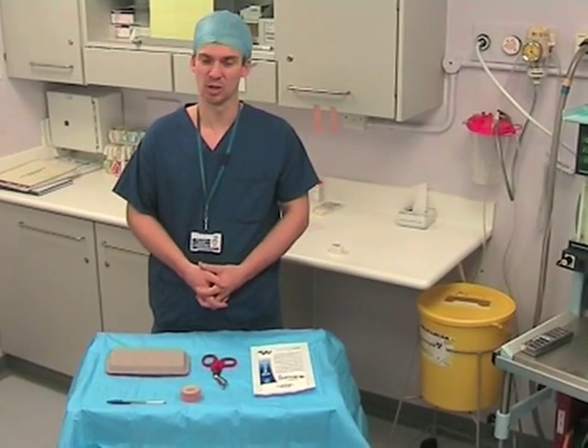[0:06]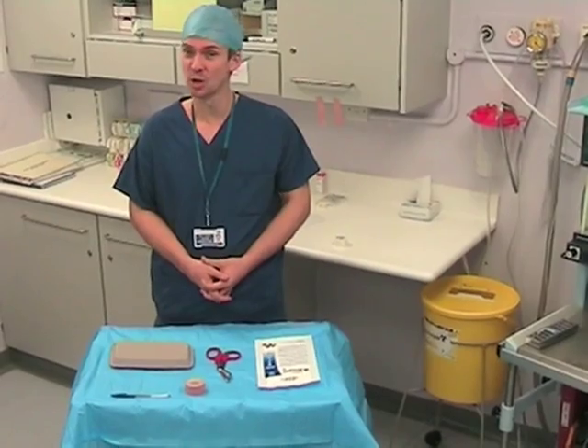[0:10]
Hello, my name is Dr. Allen. I'm an anaesthetic consultant here at Moorfields Eye Hospital, and today I'm going to show you how to make a simple, cheap, yet effective model for training Sub-Tenon's anaesthesia.
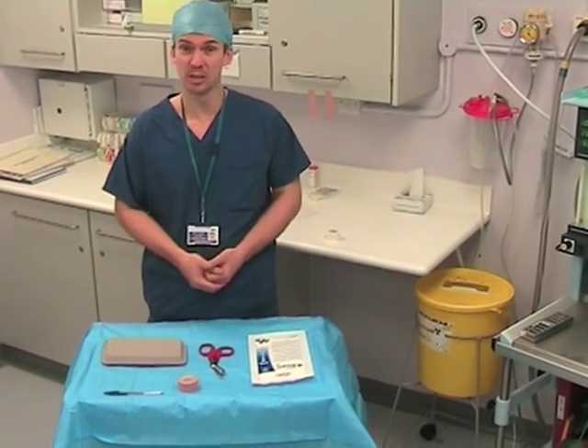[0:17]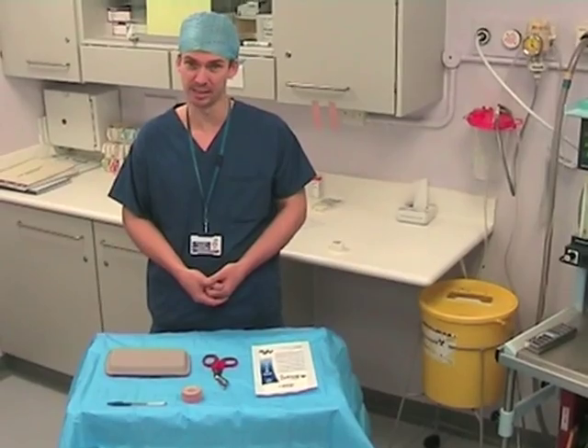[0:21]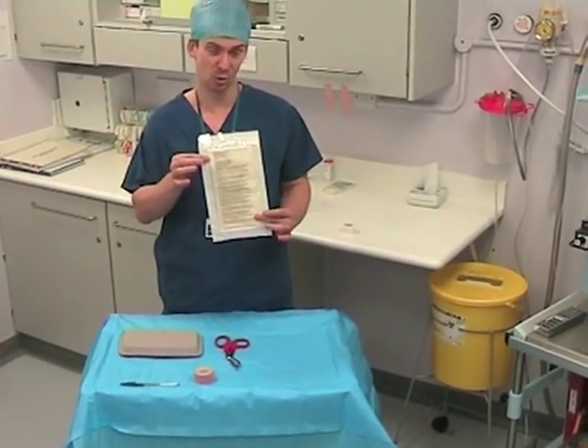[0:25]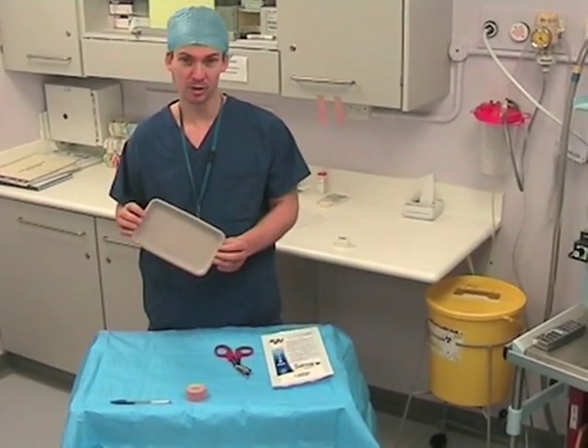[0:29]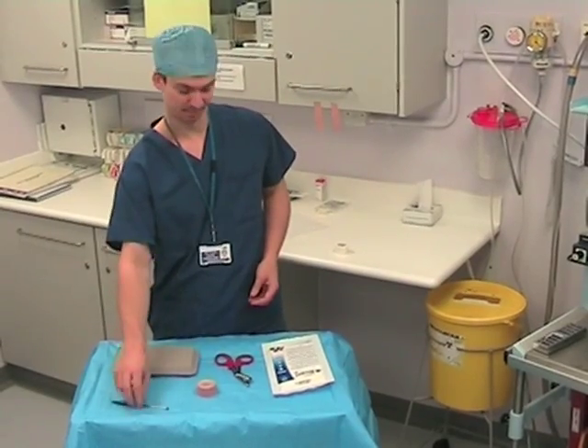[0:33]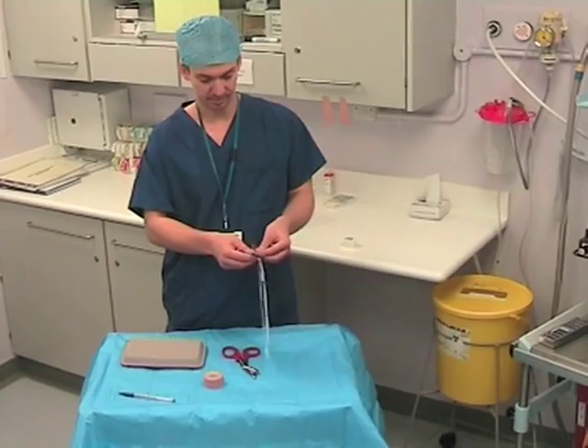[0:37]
And all you need to achieve this is a number of items which can be easily picked up in any operating theatre. These items are a pair of surgical gloves, some scissors, a couple of cardboard drug trays, some sticky tape and a pen. To make the eyeball, you would first of all take the sterile glove,
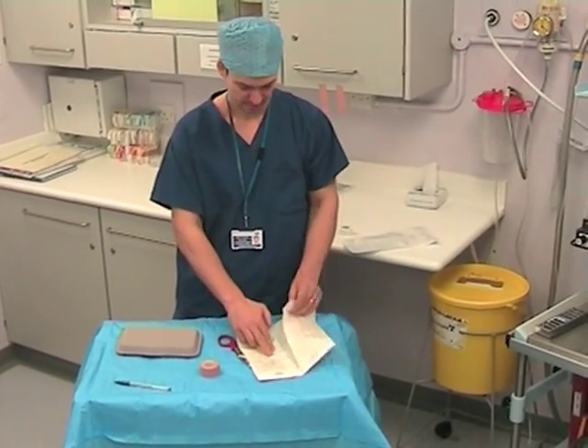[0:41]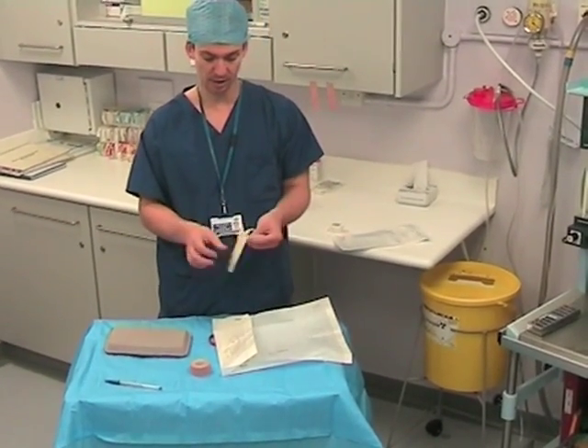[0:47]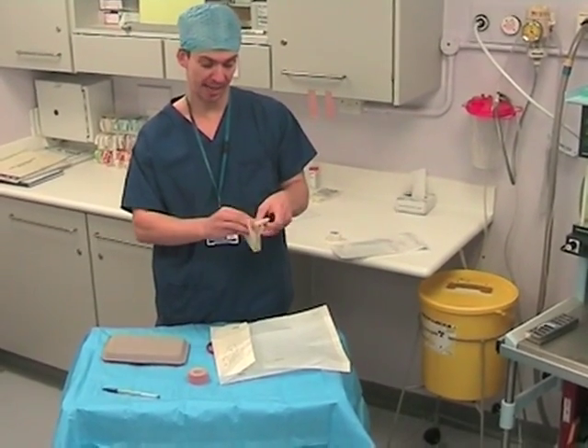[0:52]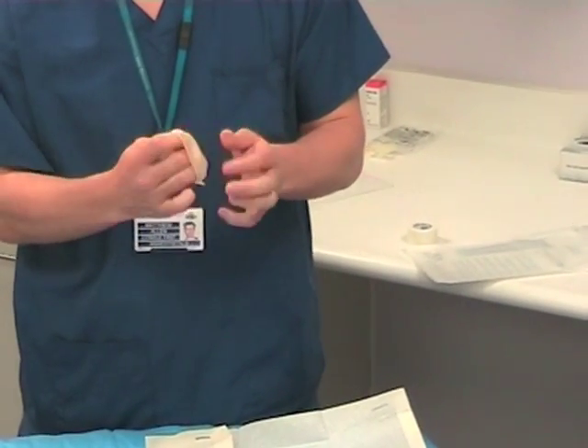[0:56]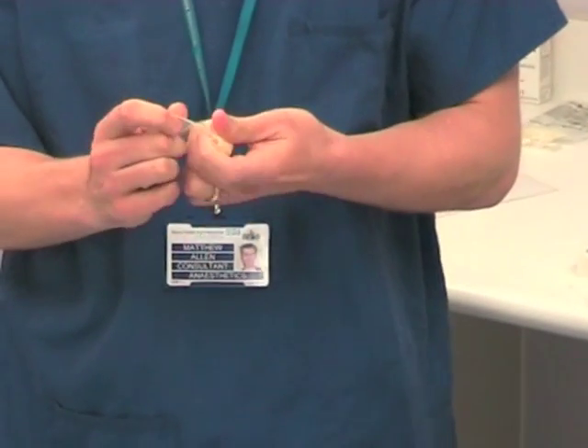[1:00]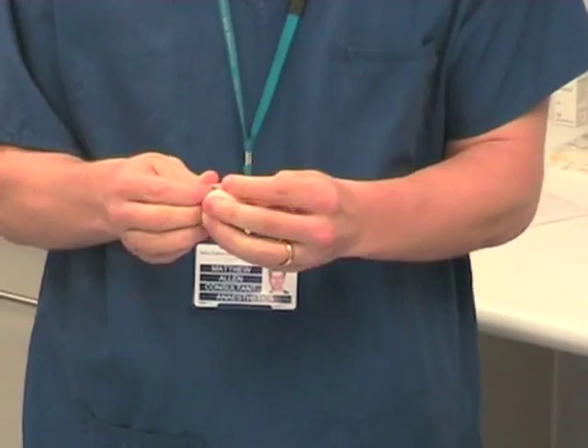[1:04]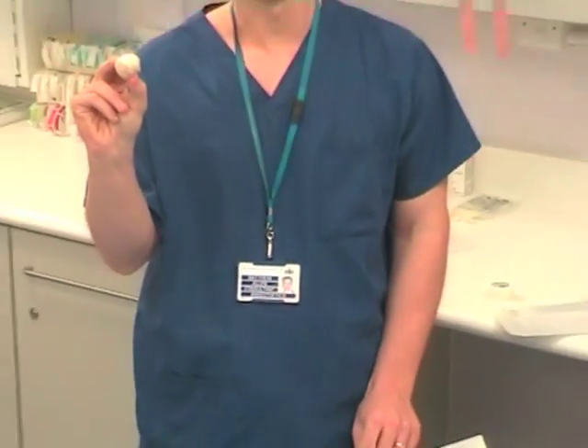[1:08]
and there's a number of ways that you can achieve this, but a simple method we have found is by taking one of the gloves, opening it up, passing the fingers back into the hole of the glove, and then continue to wrap it in on itself. And what you're trying to achieve is a very tightly packaged rubber ball. If you continue to roll in on itself, that is what you get.
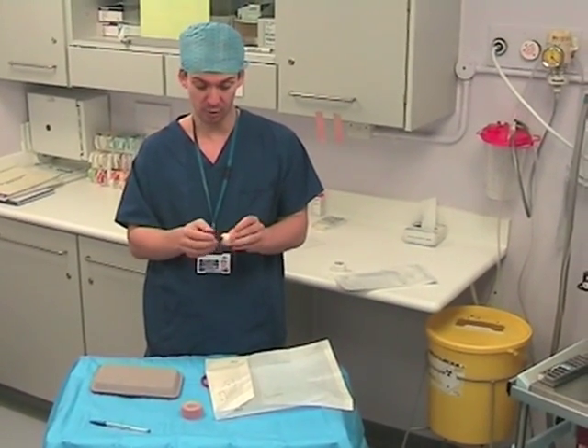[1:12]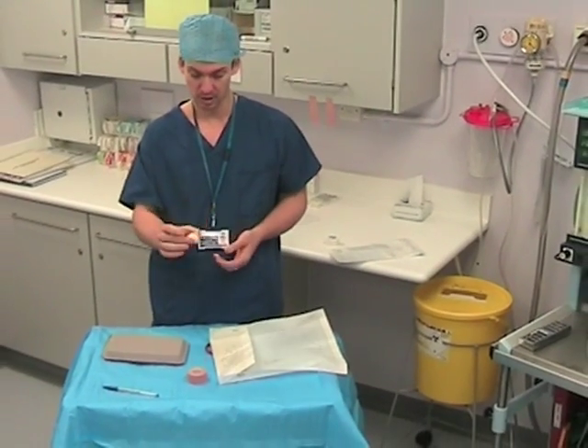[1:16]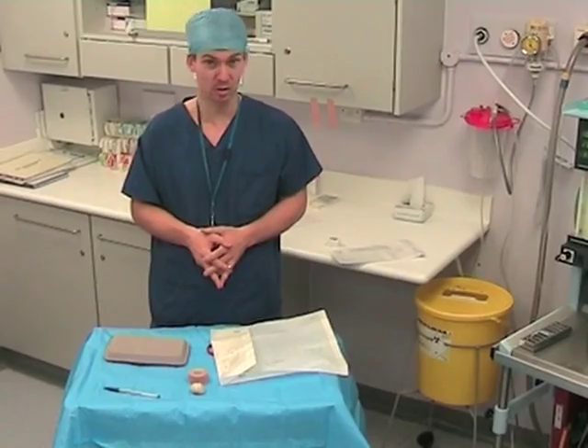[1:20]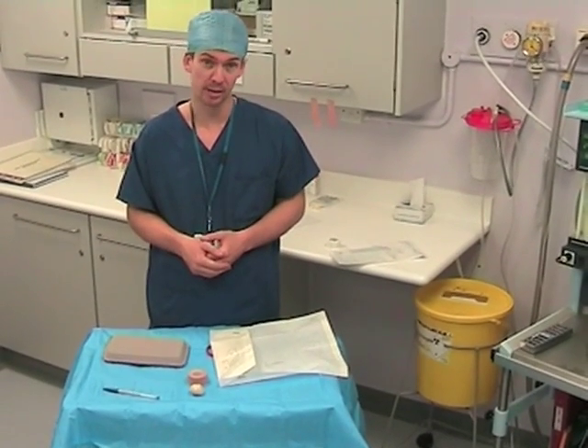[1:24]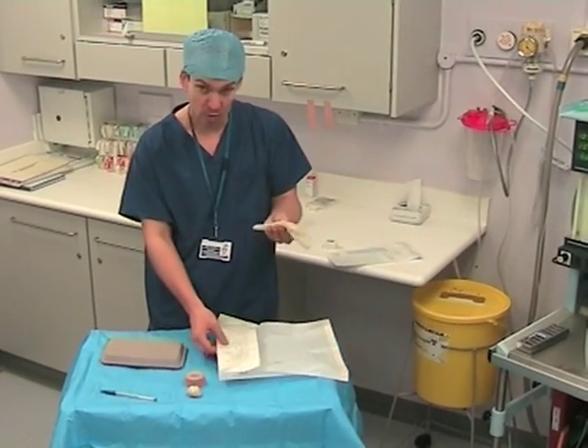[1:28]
Now, if that stays there by itself, all well and good. If not, you could put a little piece of sticky tape onto the back just to hold its position. Once you've made the eyeball, what you want to do now is move on to make the layers of the eye. And these layers are the conjunctiva, which will be the superficial layer, and also the tenons, which is the deeper layer. And to do this, you take your other glove,
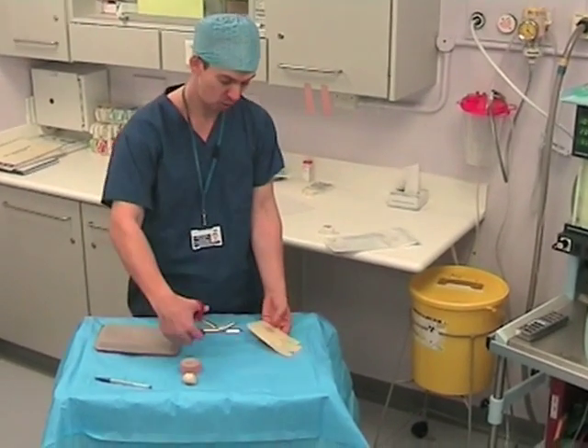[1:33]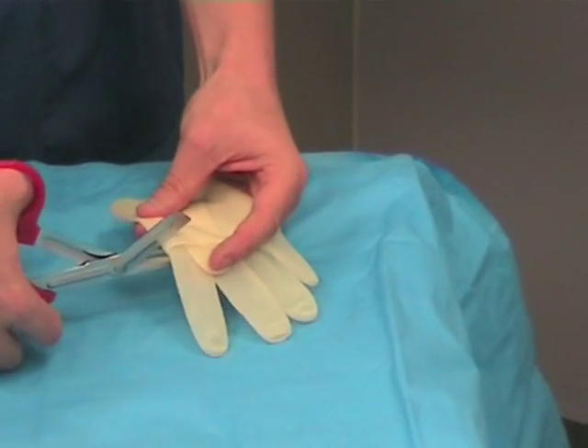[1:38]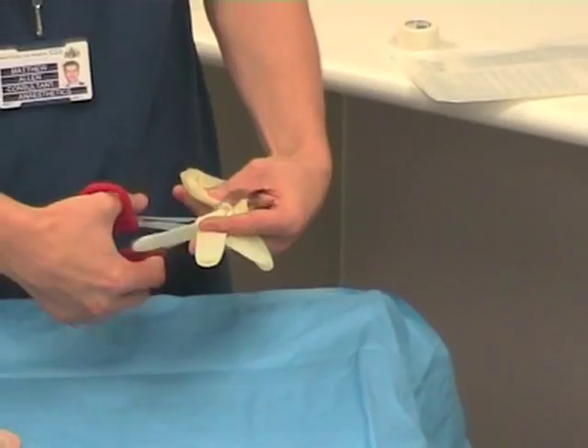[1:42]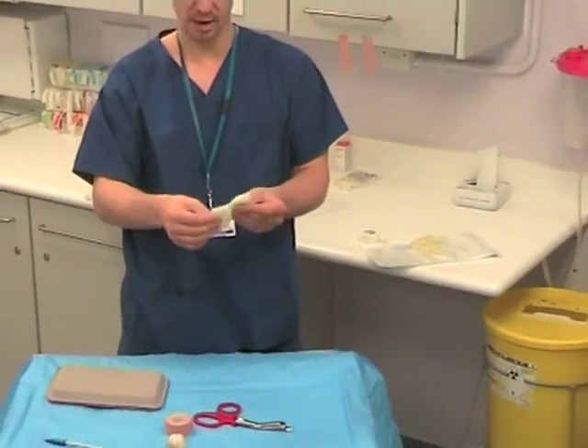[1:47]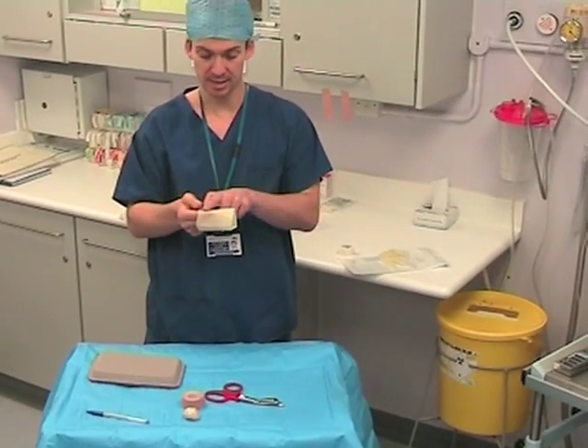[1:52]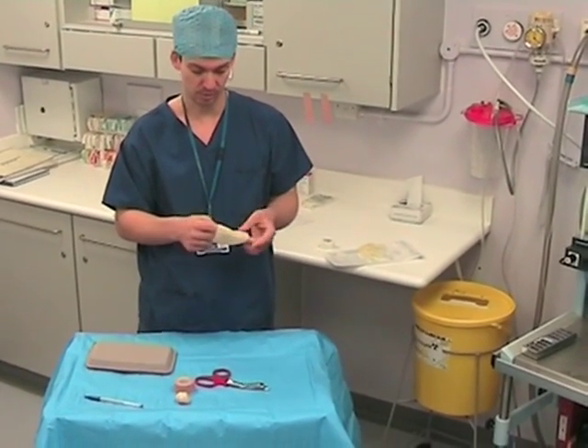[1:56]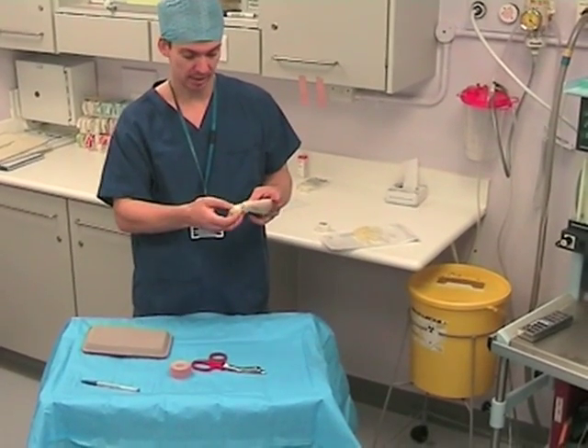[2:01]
and using a pair of scissors, you want to cut at the level of the fingers, and what you'll end up with is a double layered tube. So you can discard the fingers, and all you have left is a double layered tube, like so. And as I said, this will become the conjunctiva, which will be the superficial layer, and the deeper layer will be the tenons.
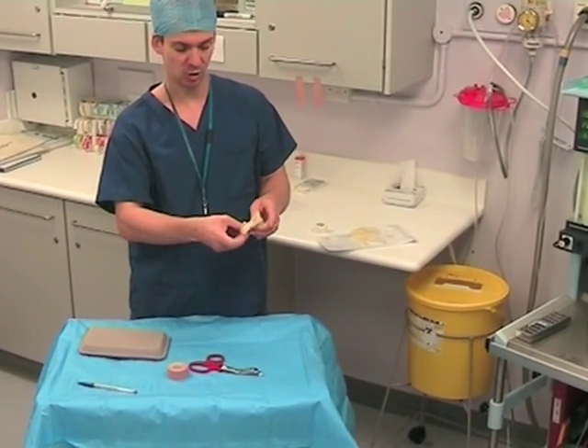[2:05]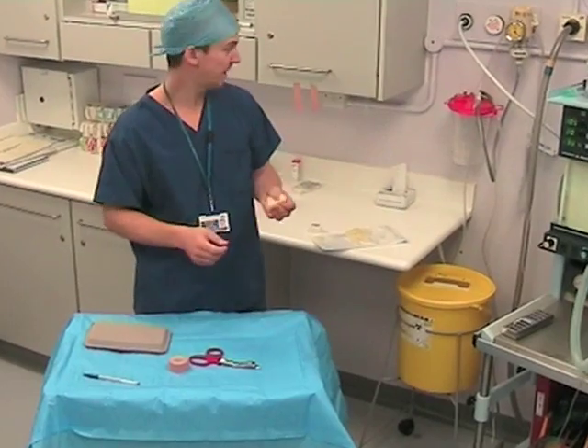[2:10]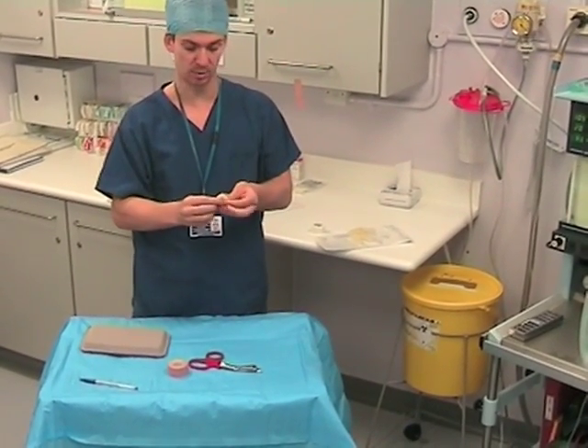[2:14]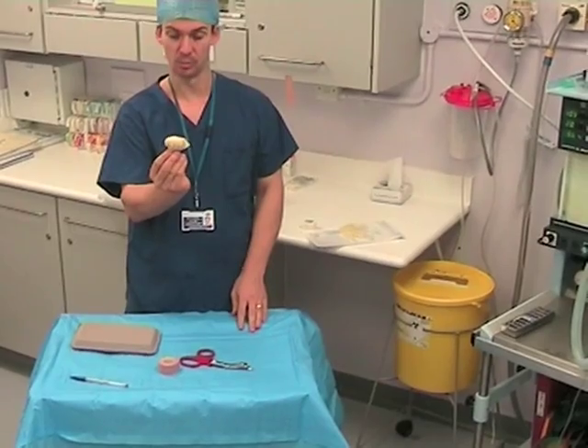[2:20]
Taking the double layered tube, you can now place the eyeball into the centre, hold it in place, and then twist it around to make a stalk. Once you've made the stalk, take a piece of sticky tape just to hold that into position. So there you have your eyeball.
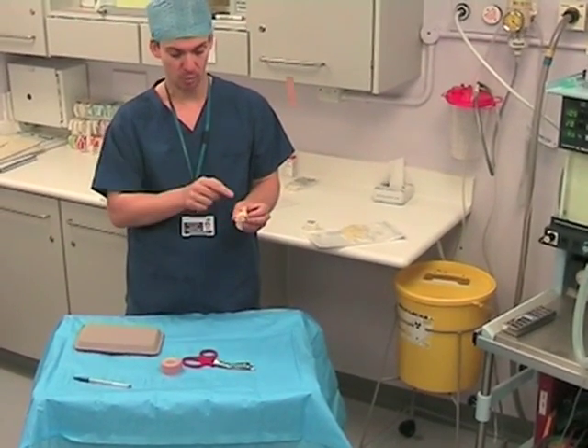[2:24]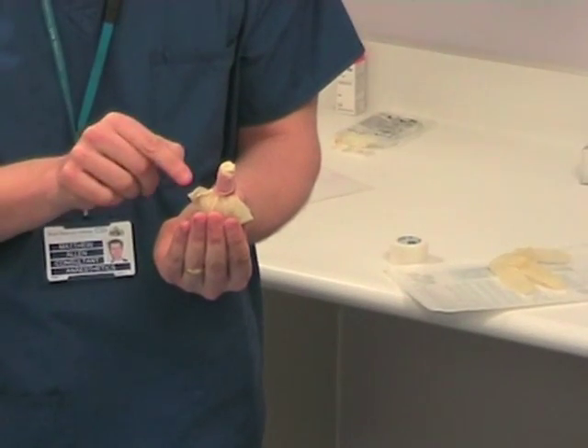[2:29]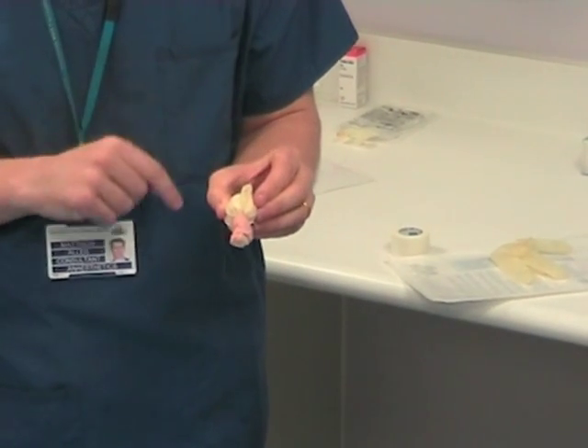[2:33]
Now it's important to note that the double layered tube on top has two different ends. One end which is free, you've got two different layers which are very obvious, and the other one which contains the reflection, and it's this layer that you will be attempting the Sub-Tenon's block on.
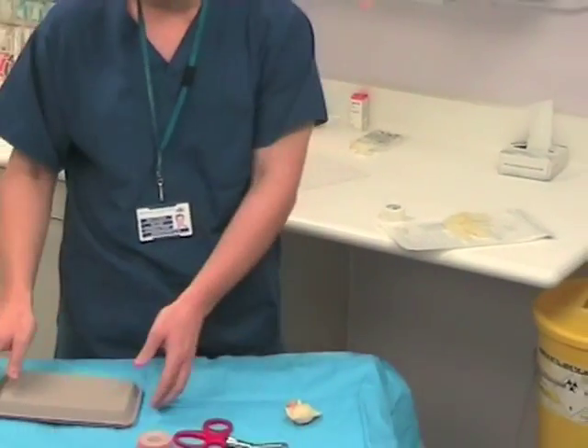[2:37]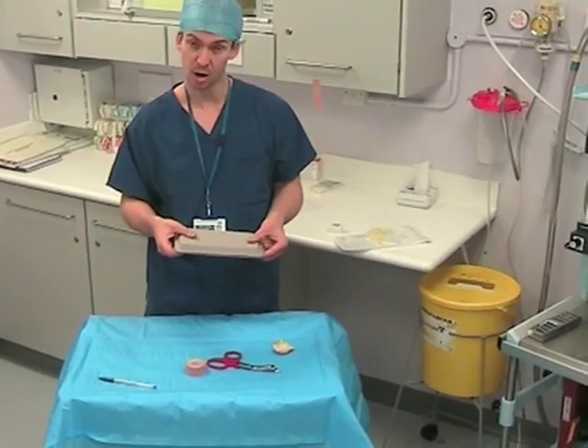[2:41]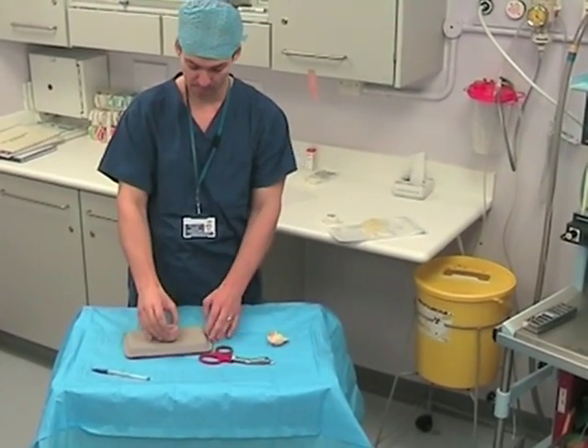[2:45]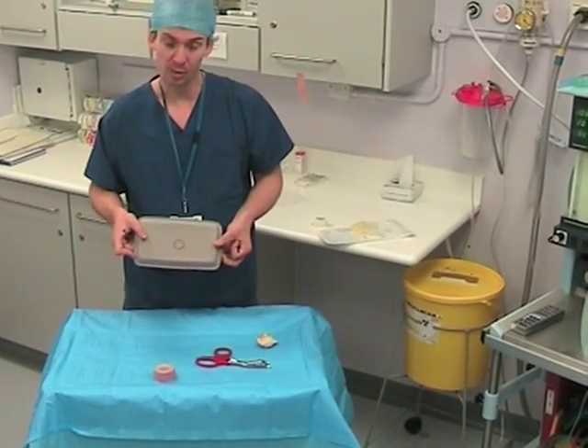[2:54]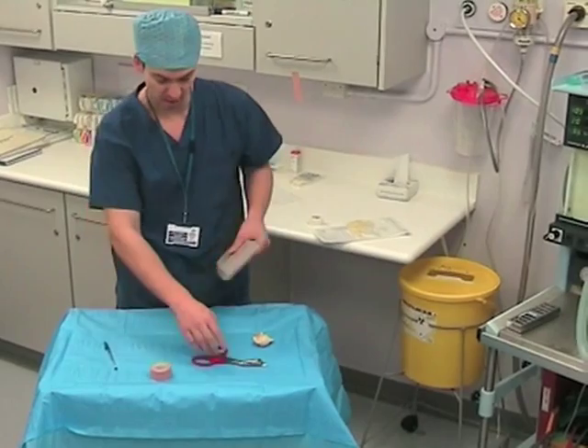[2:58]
Once you've got your eyeball, you now want to hold it in place, and to do this we use a couple of cardboard trays. I found by using the centre ring of a piece of elastoplast, you can actually get a good template. So draw in the centre, and that template will approximate to the size of the eyeball. Then you want to create the hole using a pair of scissors.
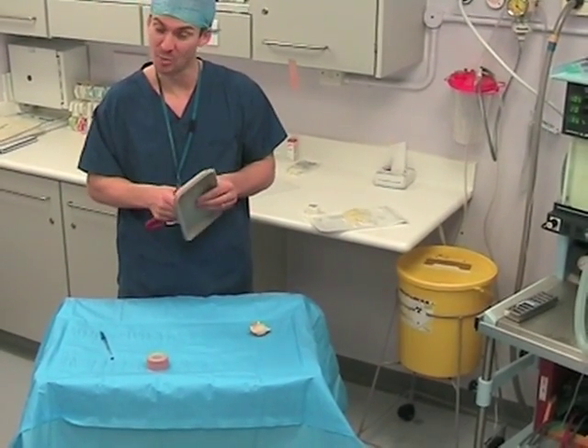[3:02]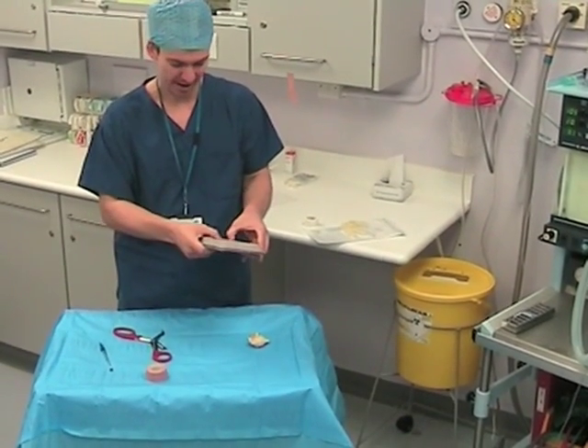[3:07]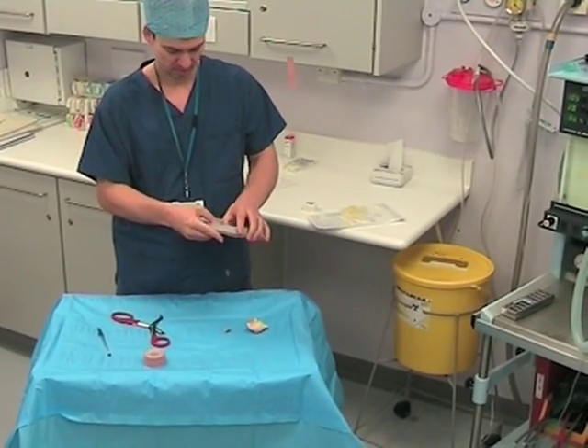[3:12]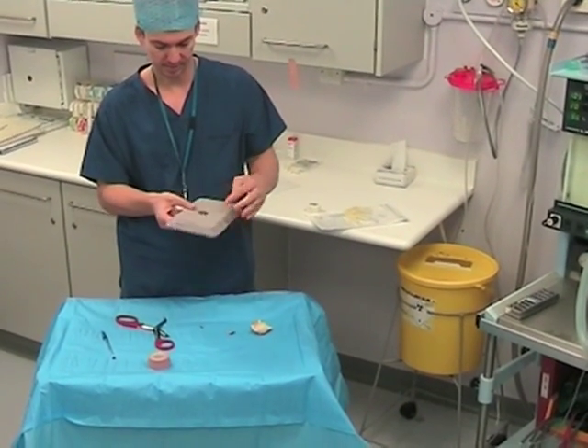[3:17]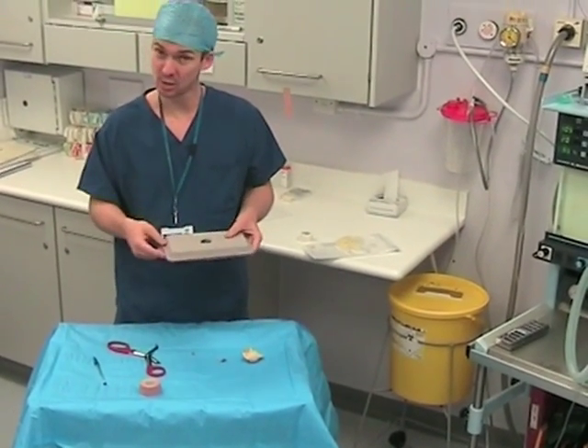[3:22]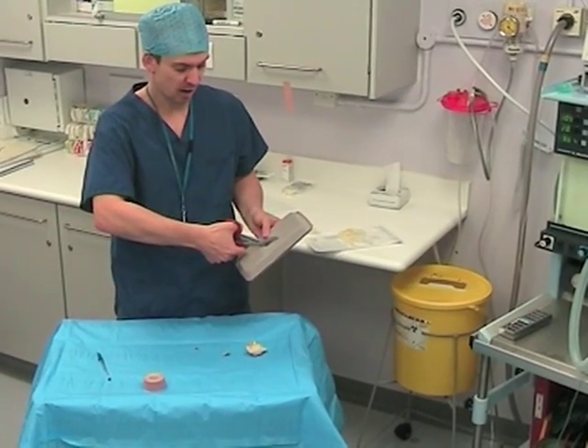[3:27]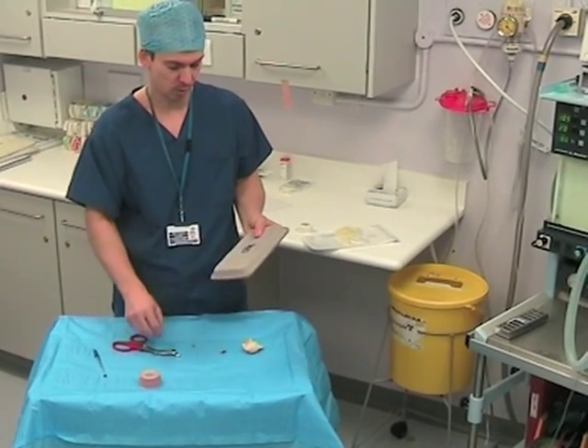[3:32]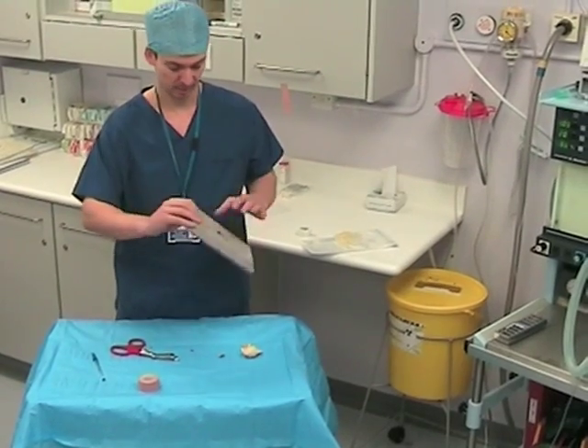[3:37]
You may want to get your adult helper to do this. And very carefully expand the hole, until you have something like that. In order to facilitate the passage of the Sub-Tenon's needle, it's important to create a little alcove. So by making a triangular cut in the corner of the paper tray, like so, you will have ample passage for the Sub-Tenon's needle to pass through.
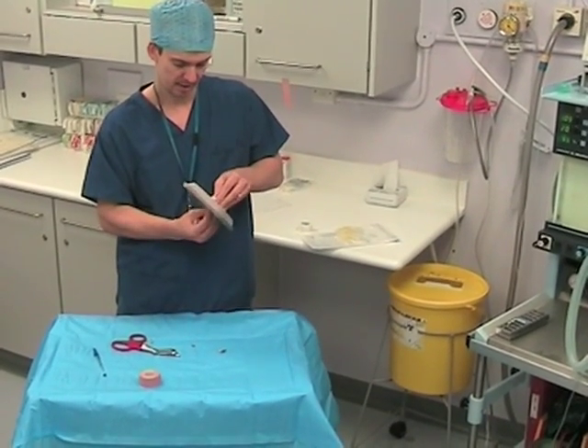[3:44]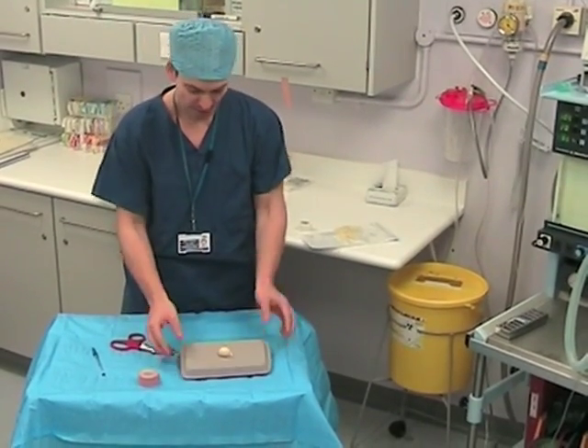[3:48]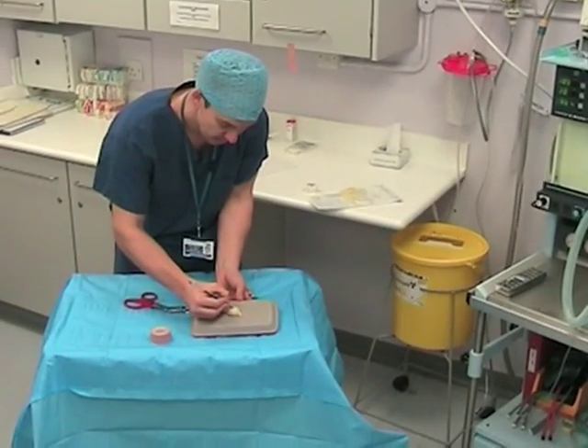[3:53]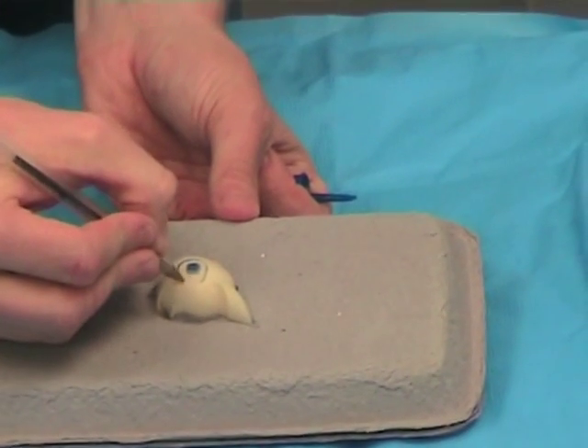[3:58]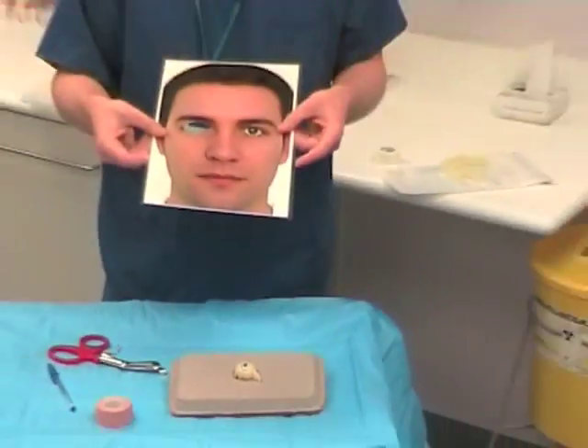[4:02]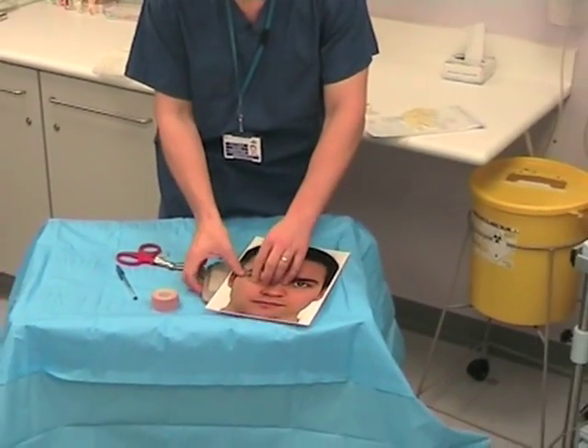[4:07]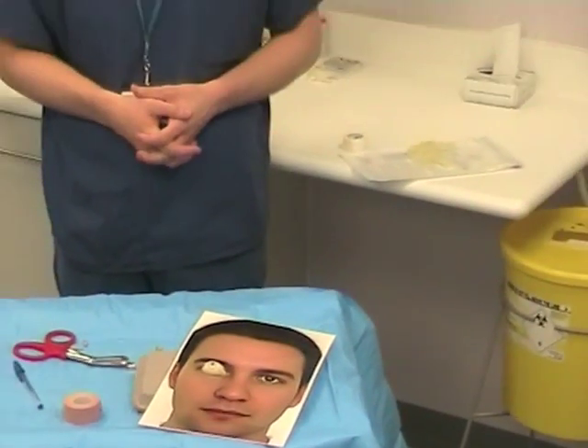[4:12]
Finally, you can pass your eyeball through the hole, and it's held in place like that. So there you have your Sub-Tenon's model. For realism, you can take a pen and create a pupil and an iris, and for even more realism, we've created a model with a face with an eye cut out, which you can pass over like so. And there you have a Sub-Tenon's model ready for use in training.
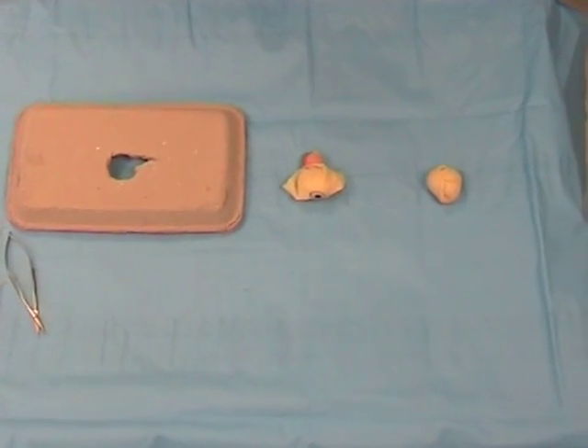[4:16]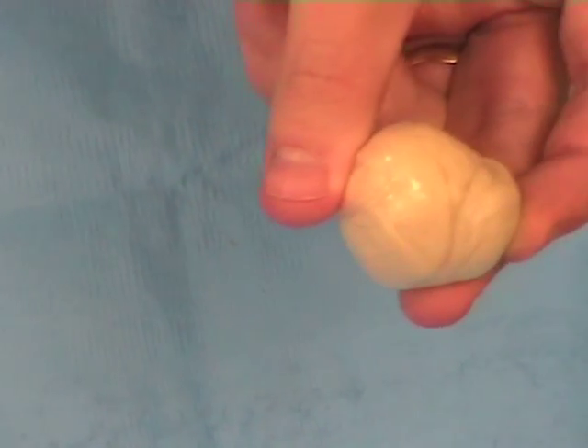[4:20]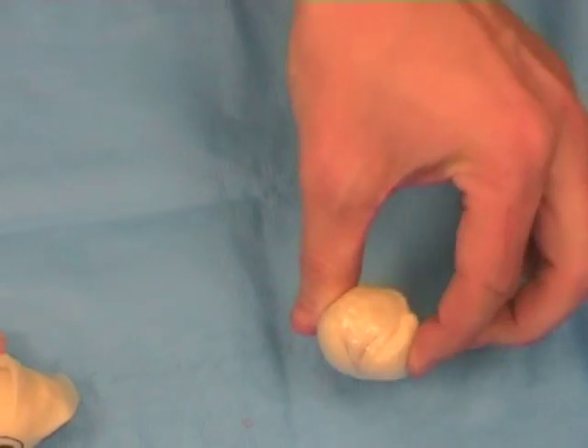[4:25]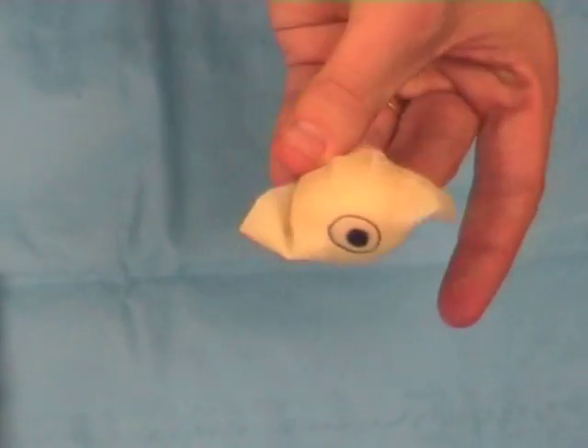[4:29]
Right, so now I'd like to actually demonstrate how we would use this model. Just to very quickly recap, we have our eyeball, which was created from one of the sterile surgical gloves and was wrapped upon itself to create this tight ball. This ball is then placed into a double layered ring which we created from the other surgical glove.
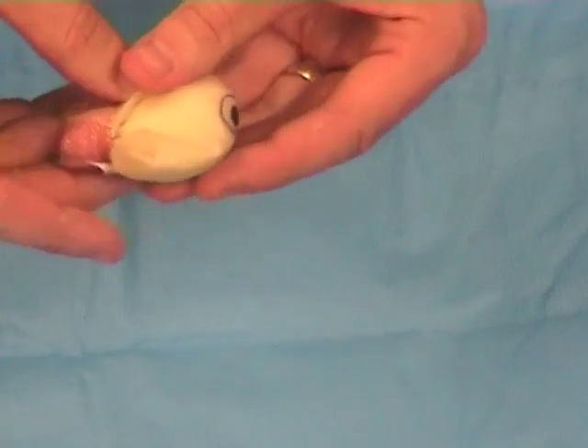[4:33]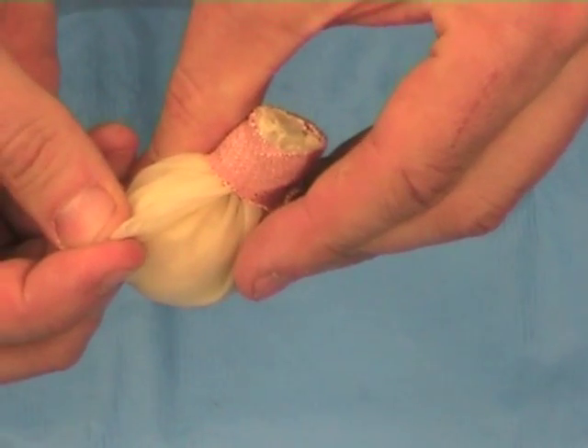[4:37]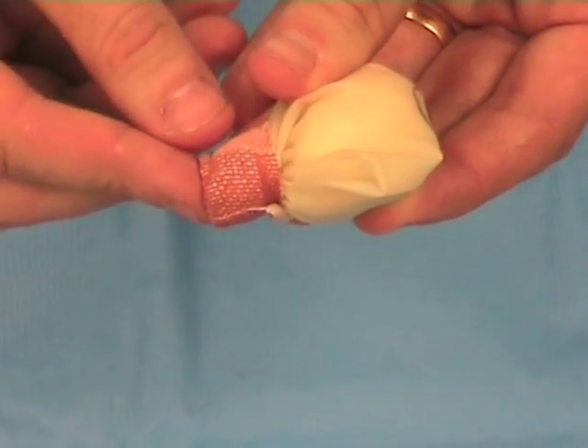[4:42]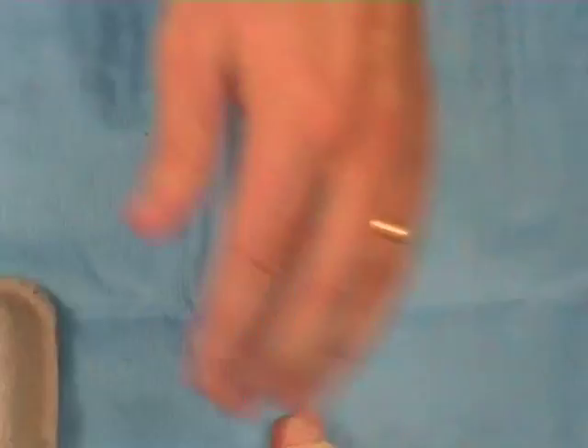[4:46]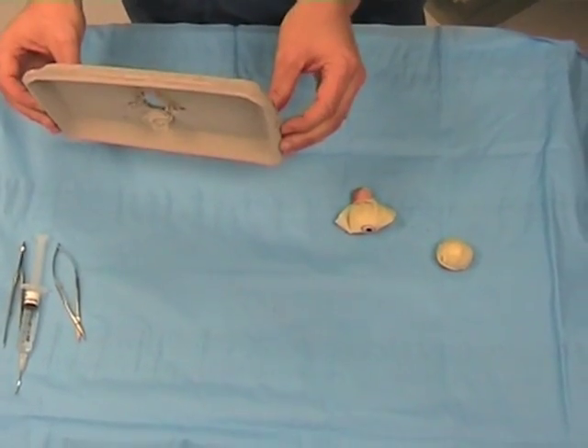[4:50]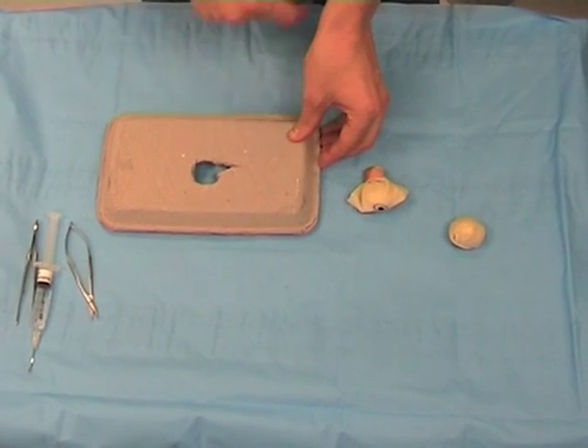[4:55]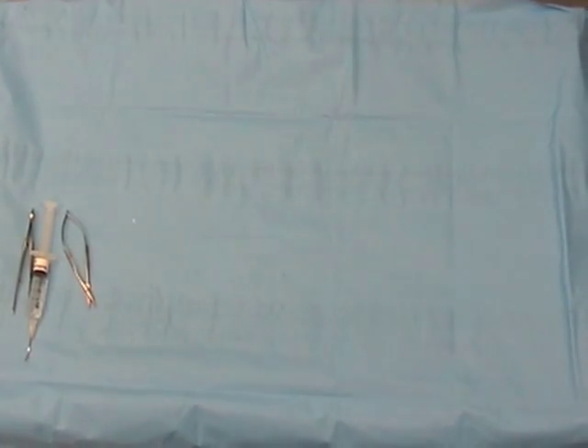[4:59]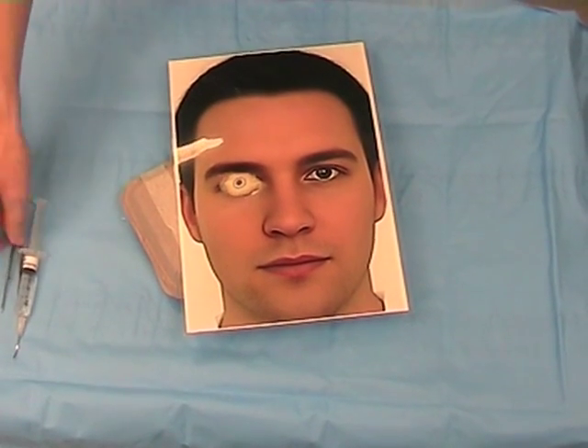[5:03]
And I think it's important just to remind you that we have two different ends here. There's an end which was cut, which is the side we won't be using, and there's the end which has the reflection of the glove, and this will become the inferior nasal part of the eye. And then of course we have our structure for holding the model, and this is two cardboard trays with a circular hole cut out and a recess to allow passage of the Sub-Tenon's needle. So now I'd like to quickly demonstrate the model.
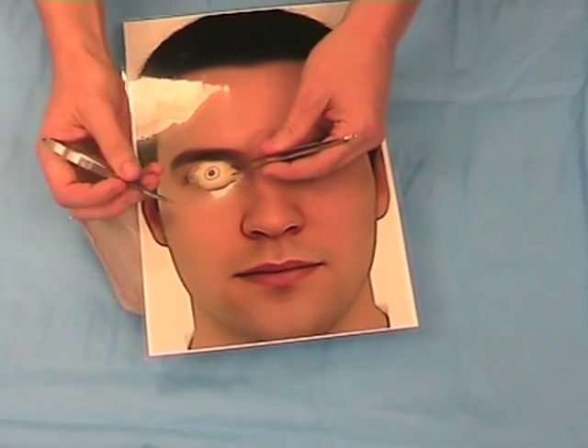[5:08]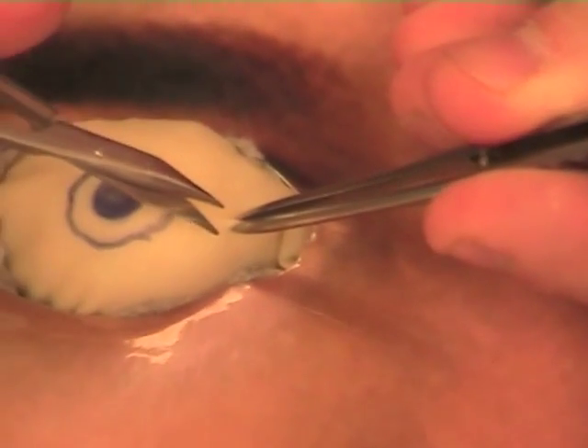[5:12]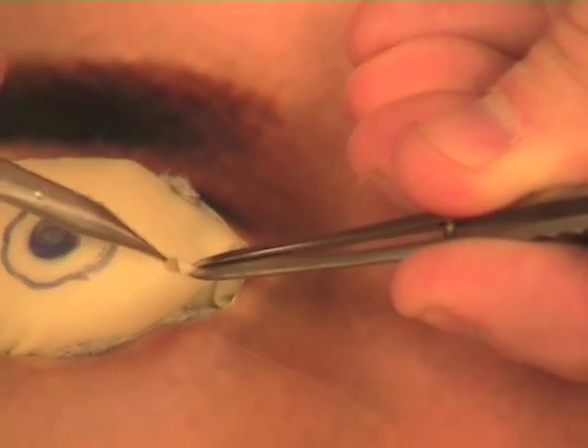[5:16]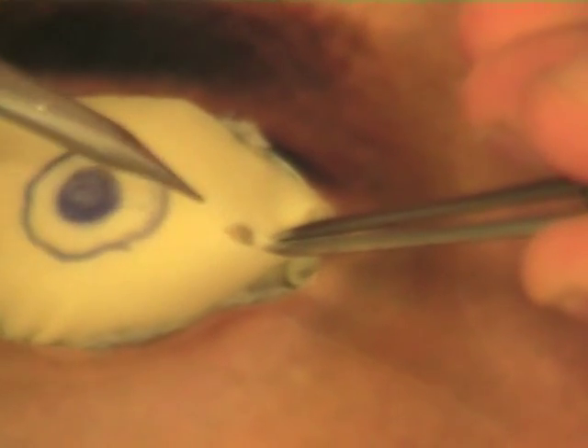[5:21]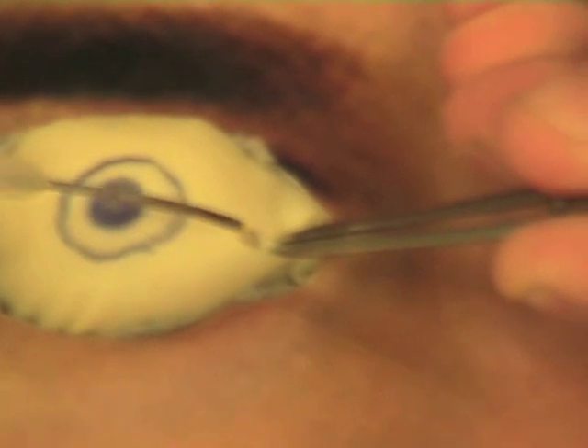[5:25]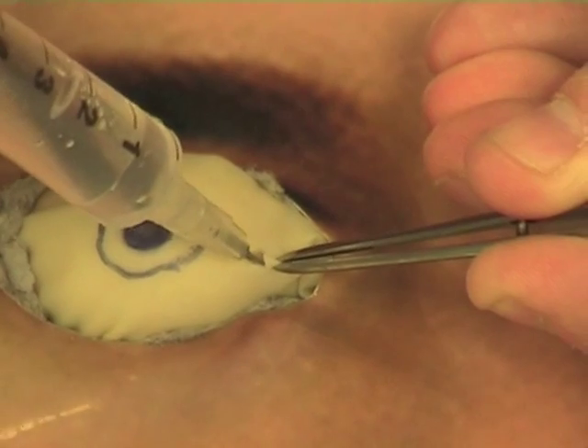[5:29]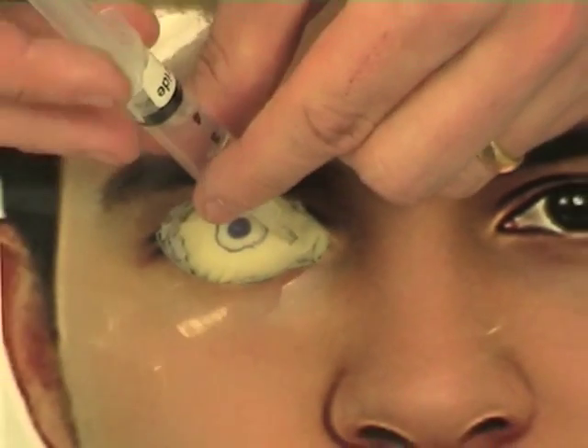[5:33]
Picking up the forceps, we're going for the inferior nasal quadrant. We will pick up both the conj and hopefully the tenon's layer and make a small snip. And there I can see both layers quite clearly, the conj and then the tenons underneath, and also the sclera of the eyeball behind. I'll then take my Sub-Tenon's needle and very carefully and gently place it into the Sub-Tenon space. And that feels very realistic, like performing a real Sub-Tenon's.
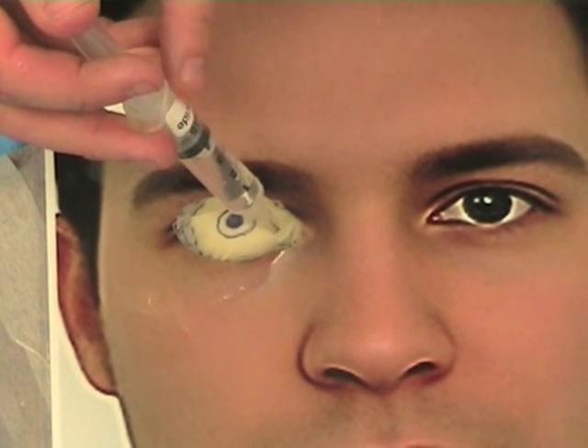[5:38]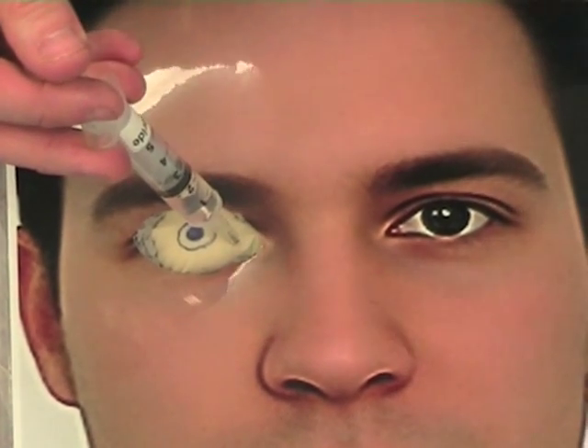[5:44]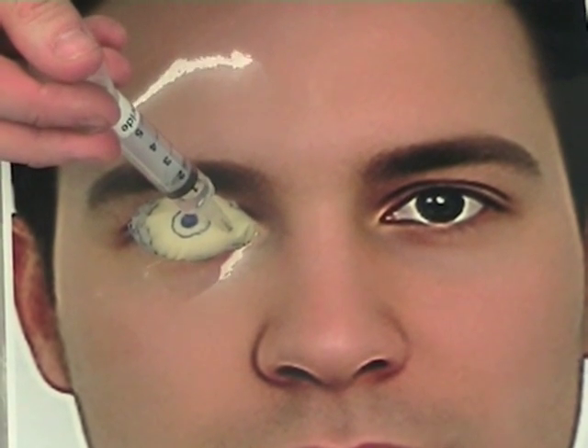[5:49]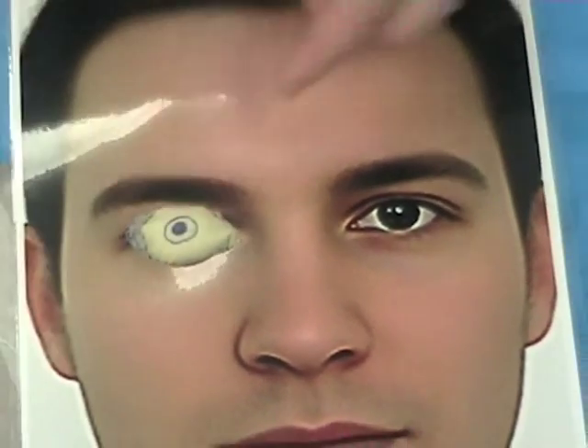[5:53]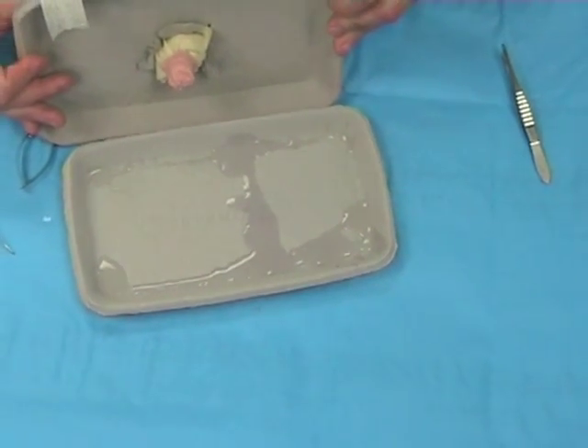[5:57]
You then want to inject, and there's a small amount of resistance, but the liquid is passing very nicely. If you only go through one of the layers, that's the conj, then the needle will not, of course, pass because it will come up against the reflection and you won't be able to inject like this. Confirmation of your block is confirmed by the liquid, which is passed underneath.
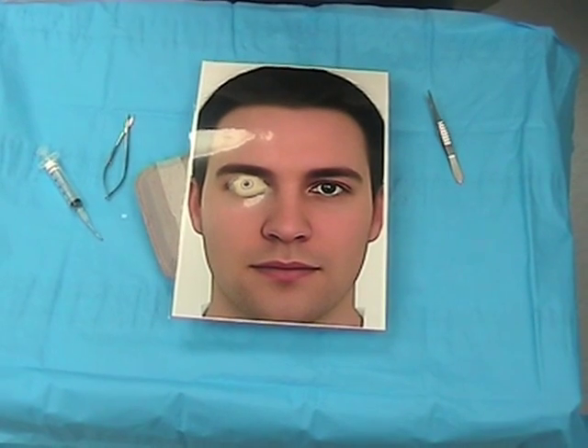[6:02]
So there you have what I think is a very simple yet effective way of demonstrating Sub-Tenons using a few materials from the operating theatre.